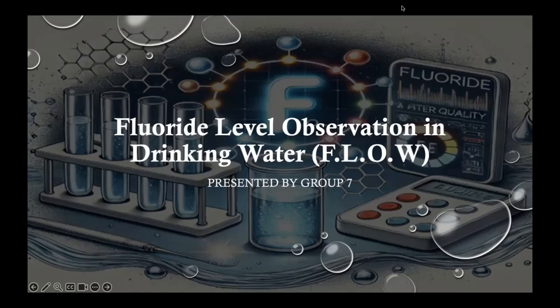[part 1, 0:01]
Hello, everyone. We are Group 7, and this is our final demo presentation, and we will be going over our senior design project, which is fluoride level observation in drinking water, also known as FLOW.
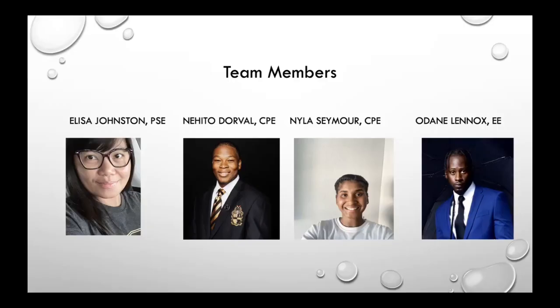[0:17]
And now we will go over our team members. Hello everyone, my name is Elisa Johnston. I'm a photonics engineer. Hi everyone, my name is Nehito Dorval. I'm a computer engineering major. Hello, everyone. My name is Nyla Seymour, and I'm a computer engineering major. Hello everyone, my name is Odane Lennox. I am an electrical engineering major.
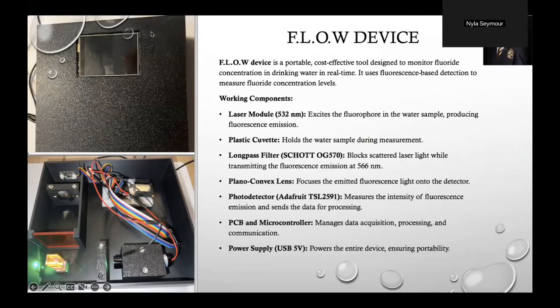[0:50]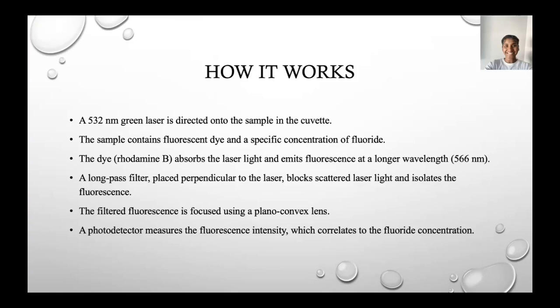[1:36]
Our FLOW device is a portable, cost-effective tool designed to monitor fluoride concentration in drinking water in real time. It uses fluorescence-based detection to measure the fluoride concentration levels. Our working components are the laser module, which is 532 nanometers, a plastic cuvette that holds the sample, a long pass filter that blocks the laser light while transmitting the fluorescence emission, a plano-convex lens for the detector, the TSL2591, which is to send the data for processing, a PCB microcontroller, and our power supply, which uses a USB 5 volts.
We are using a 532 nanometer green laser, and this laser is directed into the sample, which holds our fluoride concentration. We put the sample in our cuvette. Our cuvette goes into our device, into a square holder. The cuvette contains fluorescence dye, which is rhodamine B, and a specific milligram per liter of fluoride. This dye will absorb the laser light, and it emits fluorescence at a longer wavelength so that we can pick up on the emitted light.
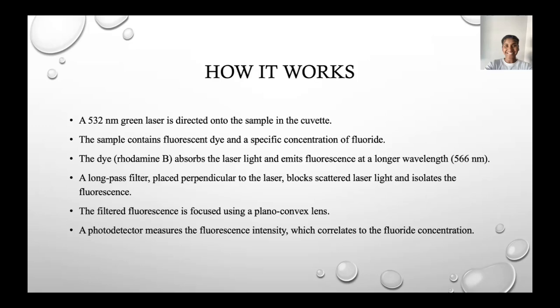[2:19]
This light goes through a long pass filter, which is placed perpendicular to the laser so it can block the scattered laser light, and I can isolate the fluorescence. Now, this filtered fluorescence we will be able to pick up through our lens, which is then detected through our photodiode, also known as our photodetector, which we have within our device. And this picks up on the fluorescence intensity, which will then display as our specific fluoride concentration.
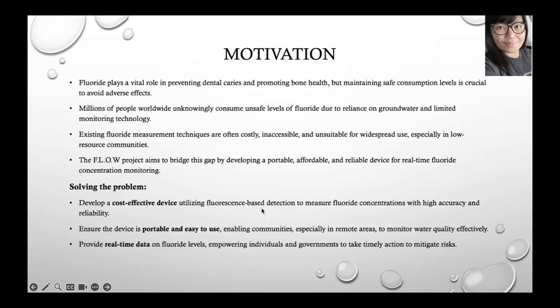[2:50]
We all know that fluoride plays a vital role in preventing dental cavities and promoting bone health. However, maintaining safe consumption levels is critical as excess fluoride can lead to serious health problems. To solve this problem, we are designing a portable, reliable device that uses fluorescence-based detection to measure fluoride concentration with high accuracy and reliability.
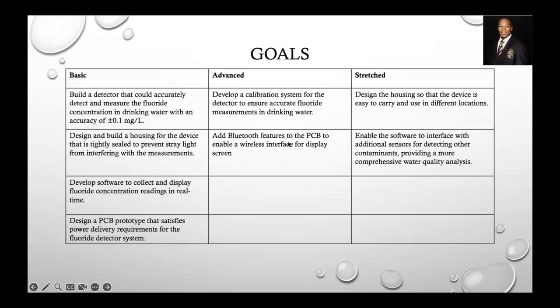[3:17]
Our goals for our project were to build a detector that can accurately detect and measure the fluoride concentration in drinking water. Also, the advanced goal for that was to develop a calibration system for the detector to ensure accurate fluoride measurements in the drinking water. And our stretch goal for that was to design a housing device that's easy to carry and to use in different locations.
The design and housing for the device is tightly sealed to prevent stray light from interfering with the measurements. And we added a Bluetooth feature to it so we can talk to it wirelessly. And our software interface with additional sensors for detecting other contaminants, providing more comprehensive water quality analysis. Our software development was to collect and display the fluoride concentration readings in real time. And our PCB design prototype was to satisfy the power delivery requirements for the fluoride detector system.
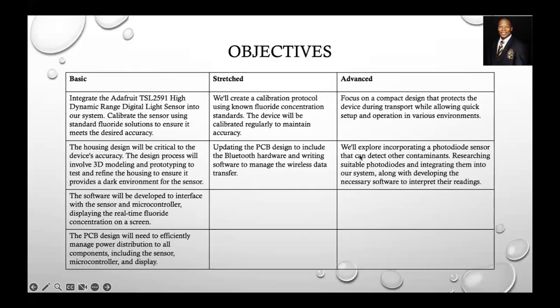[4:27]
Our objectives for our project were to integrate the sensor and calibrate the sensor using the standard fluoride solution to ensure that it meets our desired accuracy. Our stretch goal for that was to create the calibration protocol using the fluoride concentration and to make sure that the device could calibrate regularly to maintain accuracy. And our advanced goal was to focus on the compact design that protects the device during transport to other environments.
Our housing design is critical for our device accuracy, and our process involved 3D modeling and printing to make sure that the housing provides a dark environment for the sensor, and we updated the PCB to make sure we can interact with it with the Bluetooth app.
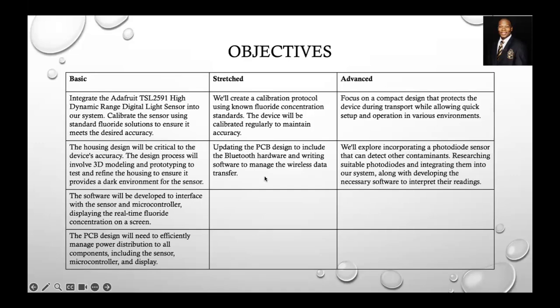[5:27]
For engineering specifications, our top three, we have a laser module that has a 532 nanometer wavelength. This is effective for excitation of the fluorophore, producing a fluorescence emission peak at 566 nanometers. We also have the long pass filter that has a cut-on wavelength of 570 with a bandwidth of 6 nanometers. It blocks the 532 nanometer laser light while allowing fluorescence emission at 566 to pass.
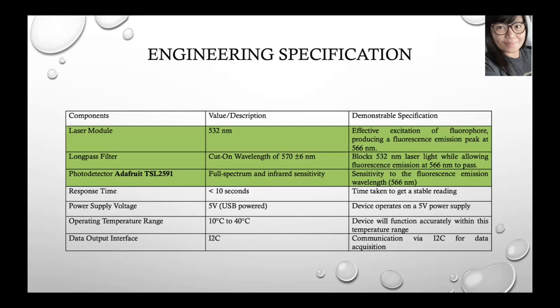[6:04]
Also, another one is the photodetector, the Adafruit TSL2591, with a full spectrum and infrared sensitivity. It's sensitive to the fluorescence emission at the desired emission wavelength.
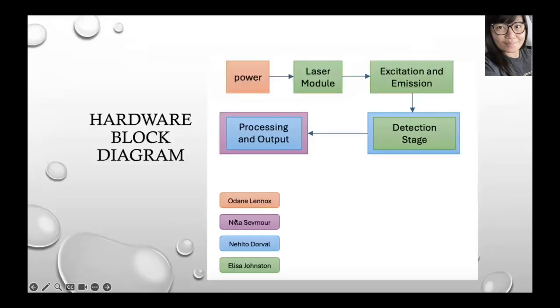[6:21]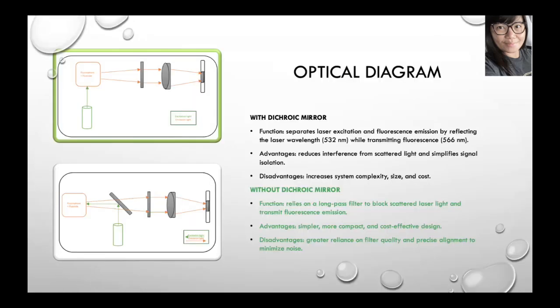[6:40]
For our hardware block diagram, we can see the power, our laser module, and then we have the excitation and emission system, then the detection stage, and the processing and output. For our optical diagram, this is where our optical design comes from.
We started with the dichroic mirror. It separates laser excitation and fluorescence emission by reflecting the laser wavelength of 532 while transmitting fluorescence at 566. The advantage is that it reduces interference from scattered light and simplifies signal isolation. The disadvantage is that it increases complexity, and with our tight budget, the cost is very expensive.
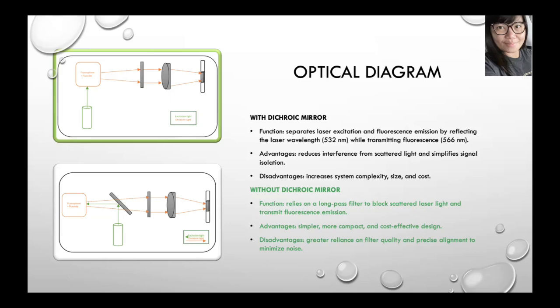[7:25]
It's almost $400. So we wound up using a design without the dichroic mirror, but it still has the same function, relying on the long pass filter to block the scattered light and transmit fluorescence emission. The advantage is that it's a simple, more compact, and cost-effective design. The disadvantage is a greater reliance on filter quality and precise alignment to minimize the noise.
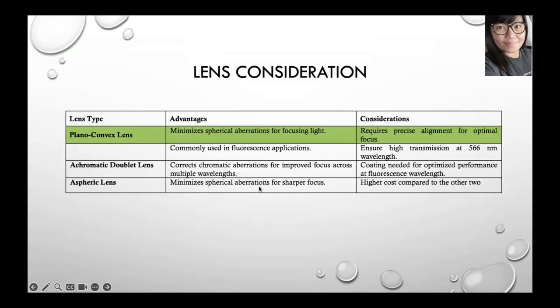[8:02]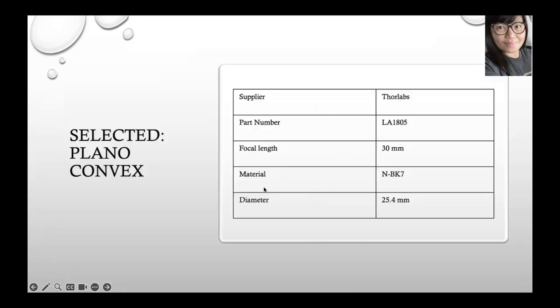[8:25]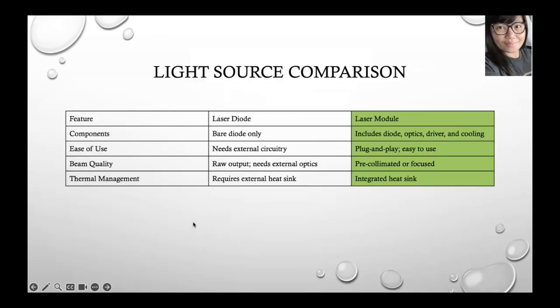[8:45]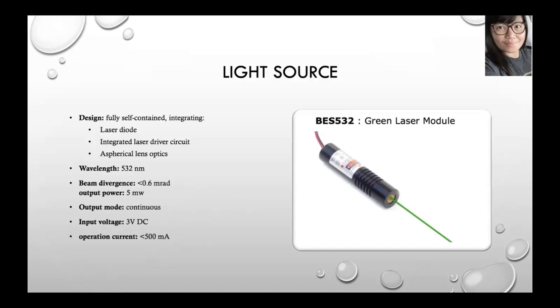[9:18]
For our light source comparison, we wanted to use the laser diode, but we also had in mind the laser module, and we wound up using the laser module because it includes the diode, the optics, the driver, and the cooling. It's also easy to use. We don't need any external circuitry. It's also already pre-collimated and has an integrated heat sink. So we picked this green laser module, which has a wavelength of 532 nanometers, a divergence of 0.6 milliradian, and an output power of 5 milliwatts. That is ideal for our project.
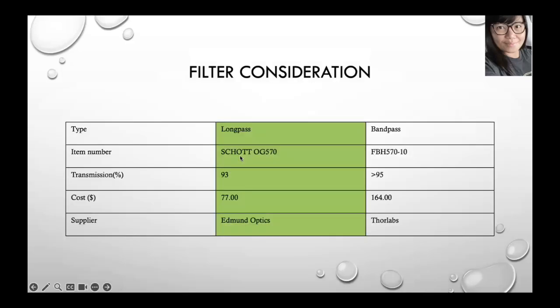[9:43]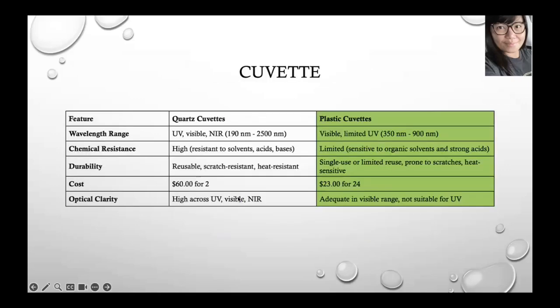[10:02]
For our filter consideration, we had the band pass filter and the long pass filter. We wound up choosing the long pass filter because it's cheaper than the band pass filter, and we got one from Edmund Optics that has a transmission of 93%.
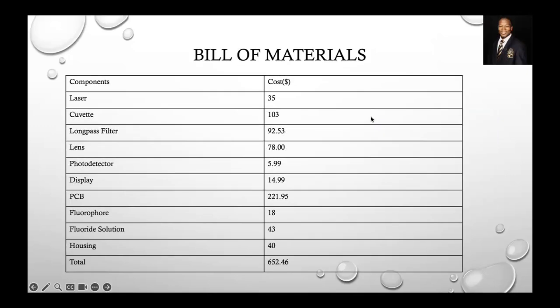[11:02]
BOM, also known as Bill of Materials. The cost for our components were $35 for the laser, $103 for the cuvettes, the long pass filter was about $93, the lens was $78, the photodetector was about $6, the display was $15, the PCB was around $220, our fluorophore was $18, the fluoride solution was $43, and the housing was $40. Which was a total of $652.
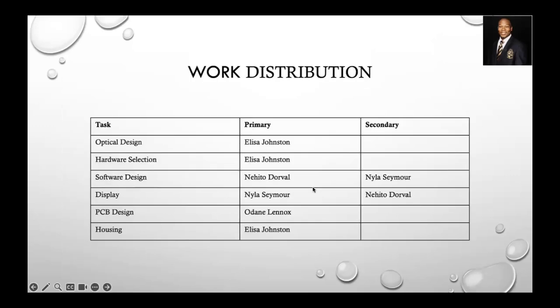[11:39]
Work distribution was pretty evenly distributed. We had the optical design by Alyssa. Hardware selection was by Alyssa also. Software design was between me and Nyla, and display also. The PCB design was by O'Dane, and the housing was done by Alyssa.
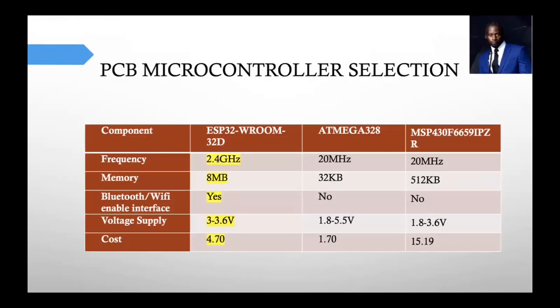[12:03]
For PCB microcontroller selection, we wanted to go with a microcontroller that was pretty flexible and had Bluetooth-enabled features. So the ESP32-WROOM-32D was an optimal choice for that. It also allowed us to use the Arduino IDE development software, which was familiar to the group. So that was another reason why we chose it over the other available options, in terms of the flexibility and the processing power of the chip itself.
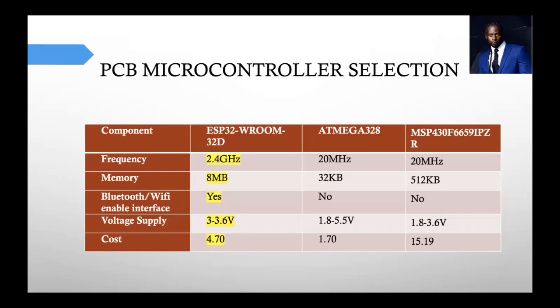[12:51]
For the PCB layout, originally the PCB layout consisted of the bridge, and it had a linear regulator, and they also had a switching regulator. Unfortunately, one of the regulators just wasn't able to really get it to work, and we ended up switching out that switching regulator and just using 2 linear regulators.
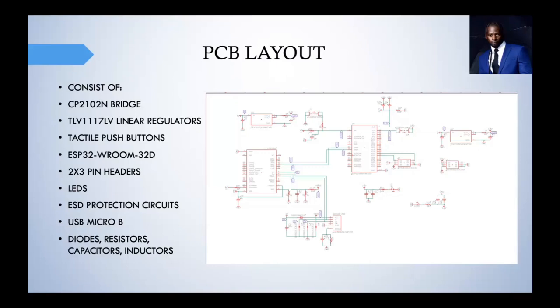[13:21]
And the reason for that was primarily because it turns out we didn't need that additional high voltage that the switching regulator would provide. So the linear regulators were sufficient, and then we had the peripherals like the tactile push buttons, the pin headers, the LEDs, and then we also had our ESD protection circuits. We went for the option of using the micro USB, and then we had diodes, resistors, capacitors, inductors, and everything else.
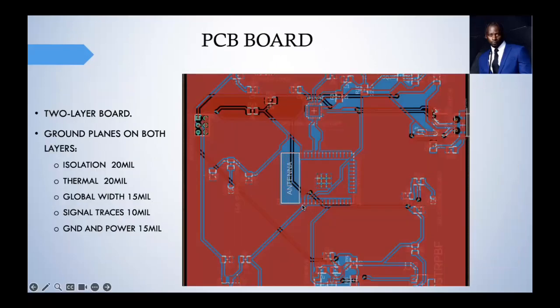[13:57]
And then for the PCB board, we went with a 2 layer layout, and we did an isolation of 20 mils to provide enough spacing. The thermal was 20 or so with a global width of 15, and we kept all of the signals at a minimum of 10, and then all ground and power were set at a standard 15 mil.
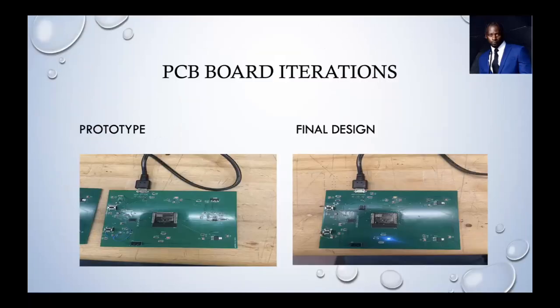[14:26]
So for the PCB boards, we ended up doing 2 iterations. The one on the left was the first iteration. That one was the original board that we used to test and to see what was going on, what was working, what was not. As I said before, the boost switching regulator was not working. We also had a MOSFET on there that was completely ineffective.
And then also we had some minor wiring issues, as you can see the wiring on the left right there. One of the circuits wasn't connected correctly, and so we had to reroute the circuit to supply enough power where it needed to go to the node to make sure the distribution was stable. And then everything else pretty much stayed the same.
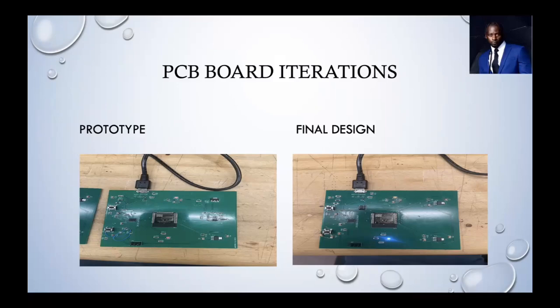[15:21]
That transition over to the final PCB board, the only difference is we switched out the regulator for linear. We added some more pin headers because it turns out we needed additional pin headers for the photo detector and the display. So that's why there's more pin headers there. And then pretty much most of the stuff stayed the same. We kept some more space in to give more heat dissipation. But overall, the board layout didn't change that much.
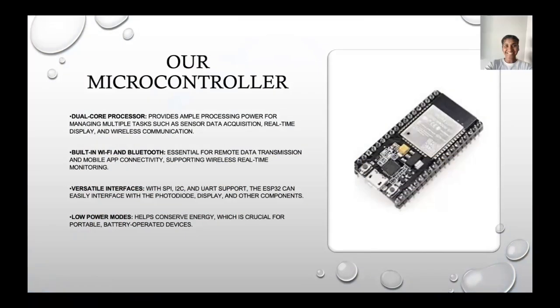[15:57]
Like O'Dane just mentioned, our microcontroller that was used by myself and Nihito was the ESP32 microcontroller. During our testing phases, when we were going through prototyping and trying to figure out how we would work with our IDE, the ESP32 was the most reliable and common source that was also user friendly for what we were trying to accomplish. So with that, it had built-in Wi-Fi and Bluetooth. And that was very important because we wanted to be able to control our device portably so that we'd be able to set certain commands without being in the terminal.
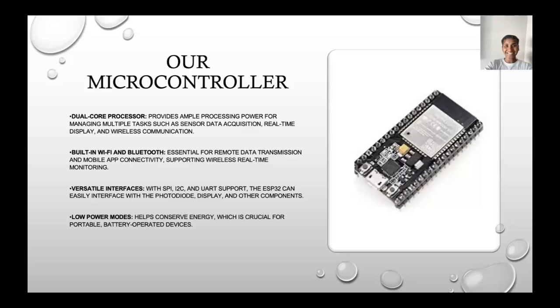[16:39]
It also is versatile with different interfaces. So it has built-in SPI, I2C, and UART support, which is very important for the amount of data we'd be configuring. It also has low power modes, so it will help conserve its own energy. And that's really important because our device obviously has different power that it's receiving in different aspects. So we want to make sure that it would be able to have that self-efficiency.
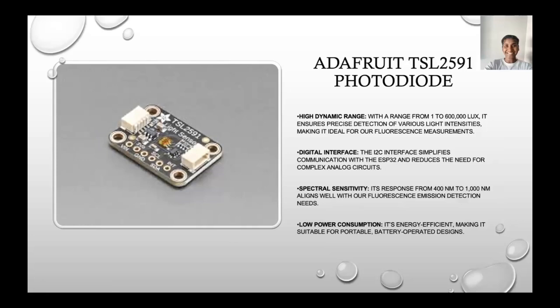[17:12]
So for our photodiode, we are using the Adafruit TSL2591. And we chose this because it has a very dynamic range. It goes from 1 to 600,000 lux. Our lux values are crucial in figuring out how much fluoride is in our samples. When we receive our lux values, we'd be able to figure out the light intensity from our emitted light. And that goes very hand in hand with our fluoride concentration values. So that was really important.
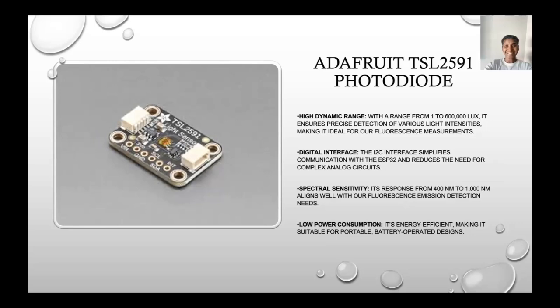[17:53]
And then also having that digital interface is very important with the I2C interface, which would go hand in hand with the communication of the ESP32 microcontroller. And then it also has low power consumption. All the devices that we try to have have this, and we wanted to make sure that we weren't overheating our device, so we chose something that had low power consumption.
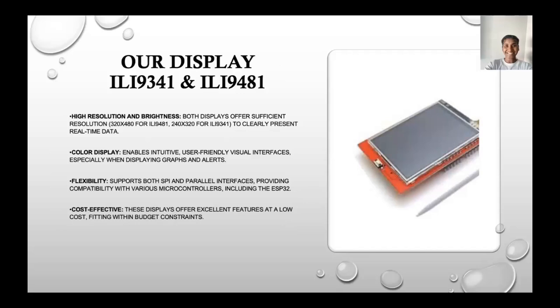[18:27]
Our display. So we chose the Adafruit ILI9341, and we were able to display all of the fluoride concentration on this device. It comes with touchscreen capabilities, and it's very flexible. It has a lot of the libraries built into the Arduino IDE, which we will get to in a second. It has a very high resolution. It also has great brightness.
And then it's able to present real-time data, which was very important for us because when our photo detector data came in, we wanted to make sure that we would be able to relay that data in real time. But also, it's very cost effective. We were able to order our display for $15, which was very important to us because we had to stay en route with our budget and in reflecting of our bill of materials.
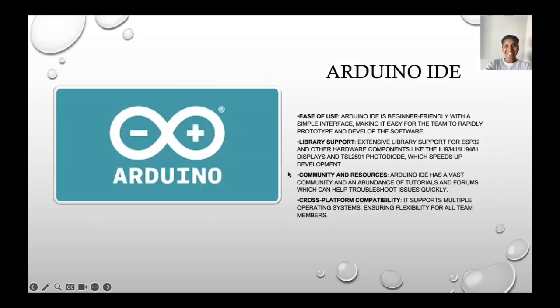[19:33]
So like I just said, we use Arduino IDE, and this is because Arduino has a history of being a very easy to use, user-friendly work environment, especially when we're doing such high level things. It's very important that we have a library that supports all of our needs. So Arduino has a very extensive library support for the ESP32 microcontroller, which is also why we went with that microcontroller, as well as for the photodiode. And then also there's a lot of compatibility across platforms, which is able to support all of our operating systems and flexibility for all of our team members.
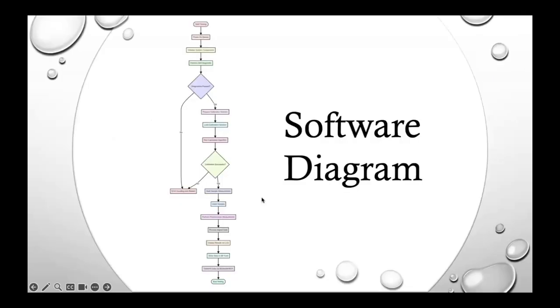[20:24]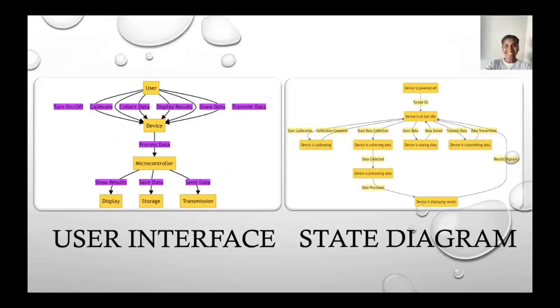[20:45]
So as you can see here, this is our software diagram. And this software diagram is our general software diagram, which shows how we were able to achieve our fluoride concentration displays for our device. Now, these are smaller subset diagrams. So on the left, you have our user interface, and the user would allow the device to turn on. So through the BLE connection, which we'll get to in a second, you'd be able to power on the device and store data, to collect data, display results through all those commands. And then they would process that data and be able to also save, send, and show results.
For our state diagram on the right, we have how our device is powered off, and when the device is powered off, like I said, through our BLE connection, we can turn the device on. It would be idle, so it would not be in a ready state, but we can put it in a ready state by calibration, by collecting data, by storing data and transmitting data, depending on what we would want the device to do. And then it'd be able to process that data and display those results and then go back to its powered off state through the BLE device.
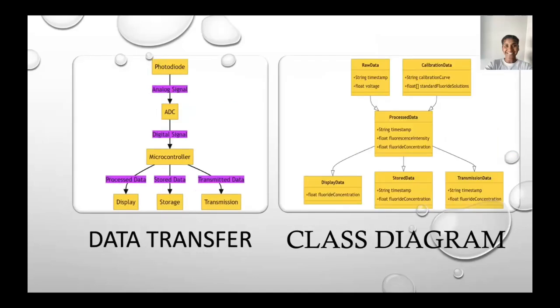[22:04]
So we have our data transfer diagram to the left. With the photodiode is where we get our first layer of data with the emitted light the photodiode picks up on. So through the photodiode, it changes the analog signal to ADC and then digital signal, and that digital signal will show up as our lux light intensity values, and that will show up through our microcontroller. Our microcontroller would be able to convert those signals so it could be stored on our side through our terminal, and then we'd be able to process that data and see how it's being read through our display.
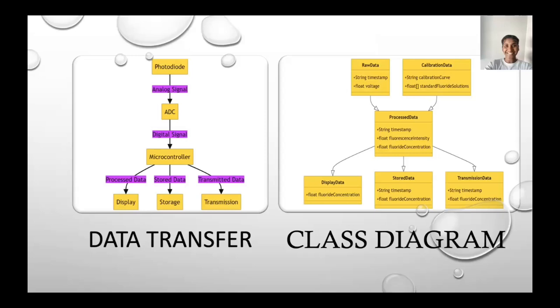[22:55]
On the right, we have our class diagram. And our class diagram just goes through how we're able to display our data, input raw data, and store raw data, calibrate our data to show our calibration curve, and timestamp data with our process data, transmission data, and store data.
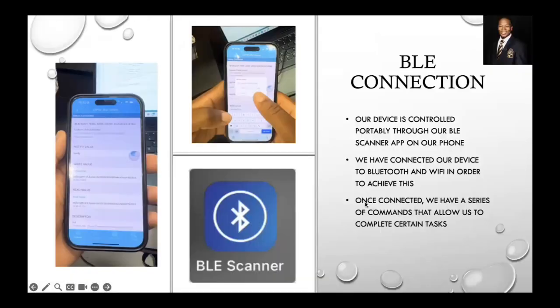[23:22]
All right. So through our BLE app, through our code we made a portion where we had to make sure that we establish a name for the device, and through our BLE app, we tried to see if we can find the device. And when we do, we select it, and through there, we press customize characteristics. Through the customization of the characteristics, we get to write, notify, or set our values, so our commands, I would say. And from there, we are able to send our commands through the device, and we tell it to turn on, turn off, just all the commands that Nyla previously stated. We're able to do all those things with the app, which is very helpful for the ease of use of our device.
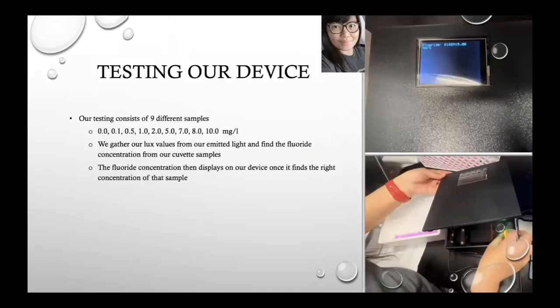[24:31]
For testing our device, our testing consists of 9 different samples, as I mentioned earlier. We have from 10 milligrams per liter down to 8, 7, up to just the distilled water. We gather our lux values from our emitted light through our photodetector and find the fluoride concentrations from our cuvette samples. The fluoride concentration then displays on our device once it finds the right concentration of that sample.
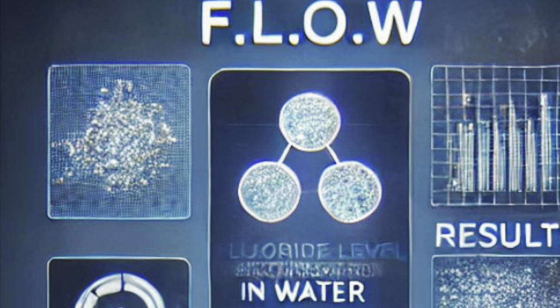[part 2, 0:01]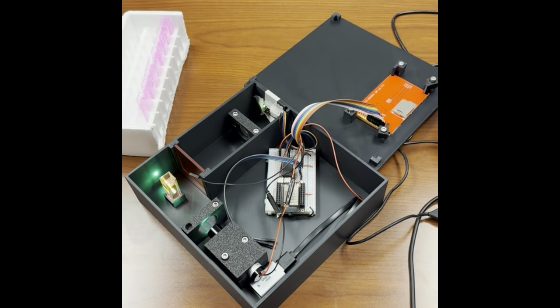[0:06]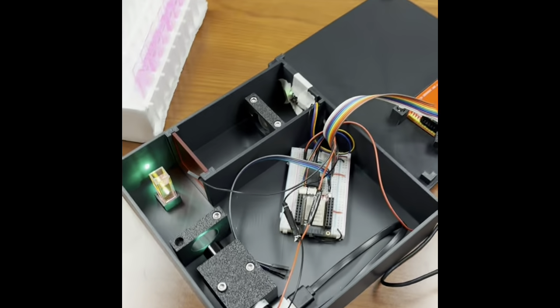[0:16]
Hello everyone, we are Group 7 and we are presenting our team design project, which is fluoride level observation in drinking water. This is the inside of our device.
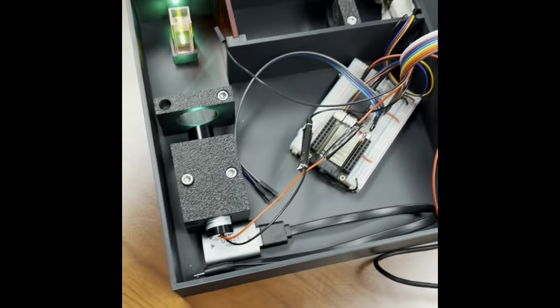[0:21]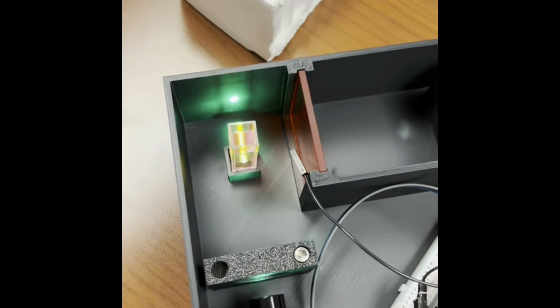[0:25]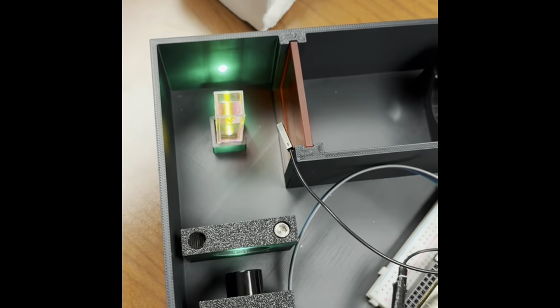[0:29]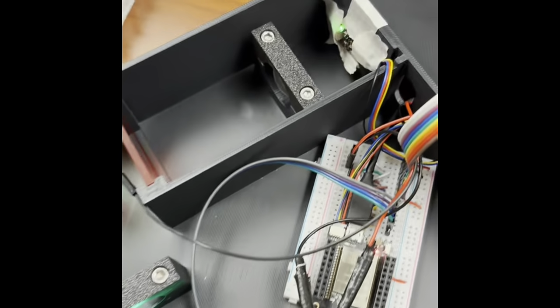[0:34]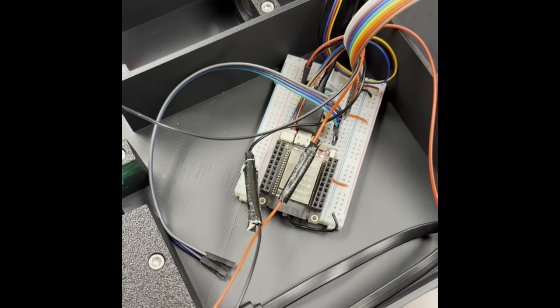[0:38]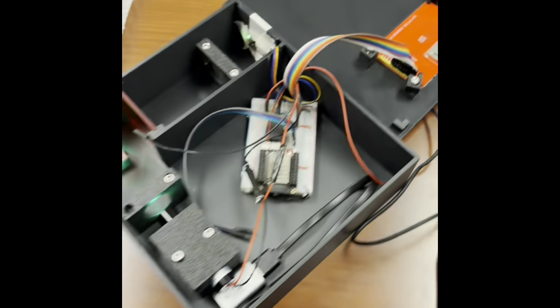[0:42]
As you can see here, from this point we have our laser, our filter and our lens. In this square holder is the sample cuvette that has the rhodamine B and the fluoride concentration. We have our photodiode, and we have our ESP32 microcontroller that is connected to our display.
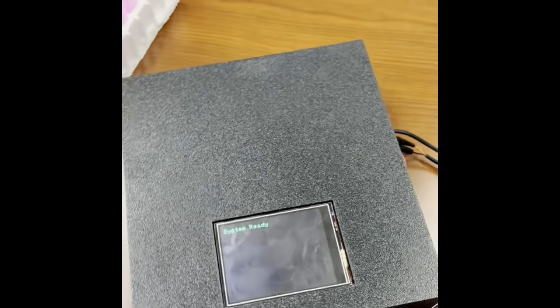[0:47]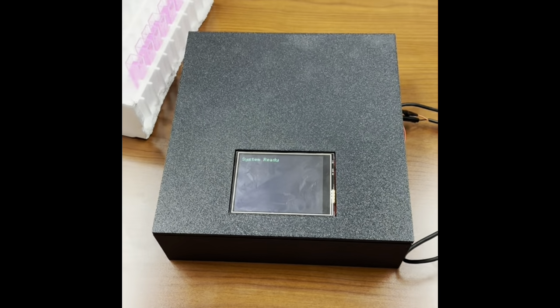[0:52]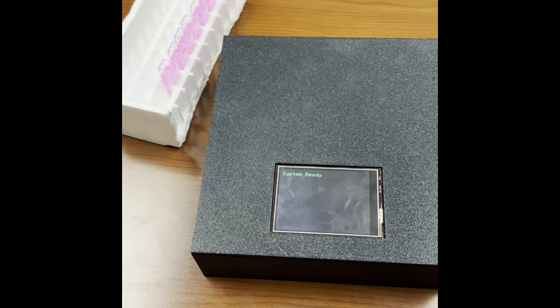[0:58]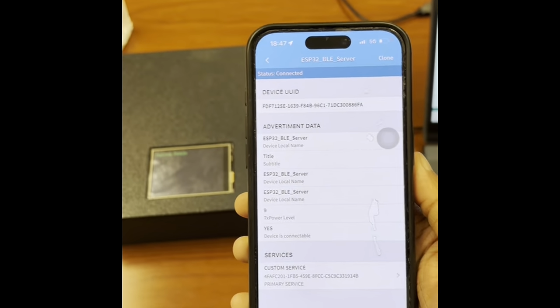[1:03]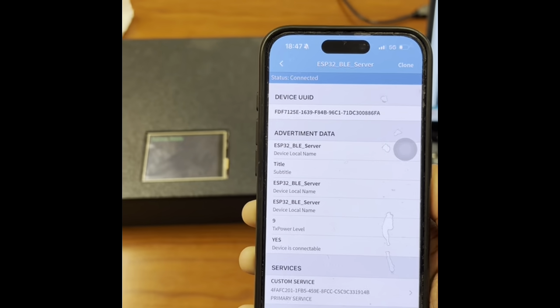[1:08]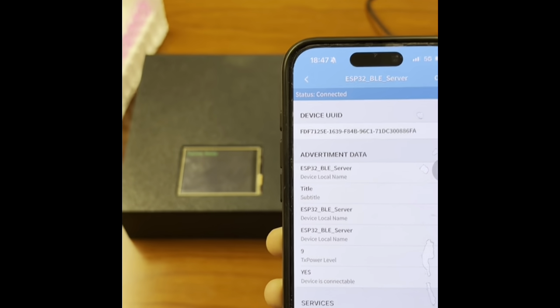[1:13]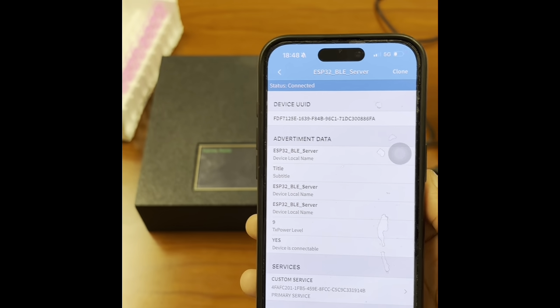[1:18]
Okay, so as you can see here, our system says it's ready. This is connected through our Bluetooth device. We have a BLE server on our BLE connection that's connected to our device, and we are able to connect to it to make sure that it says system ready, along with other commands that allow us to control our system portably.
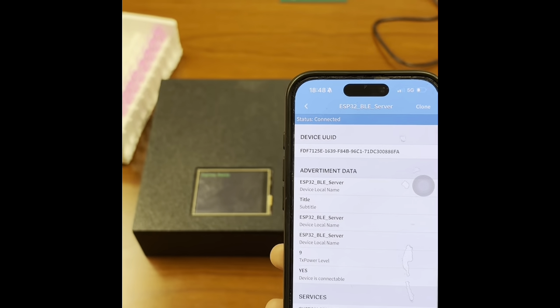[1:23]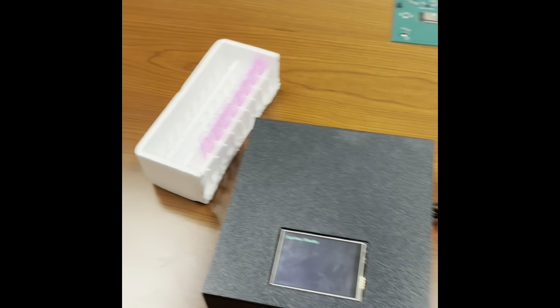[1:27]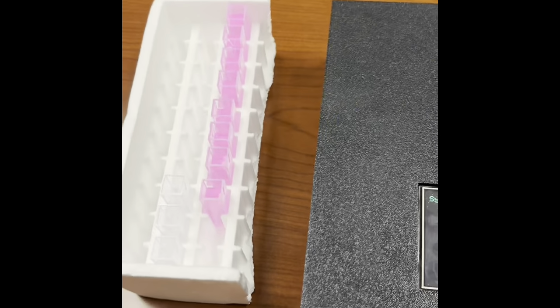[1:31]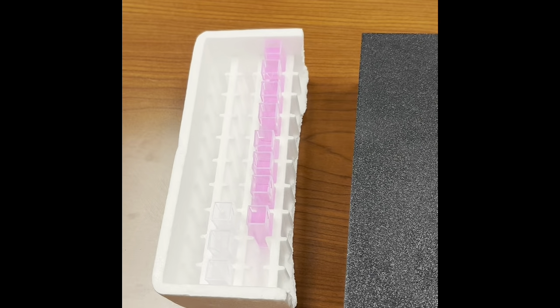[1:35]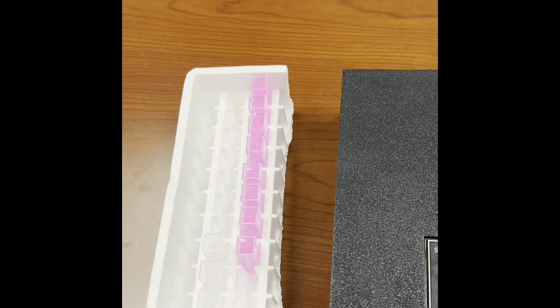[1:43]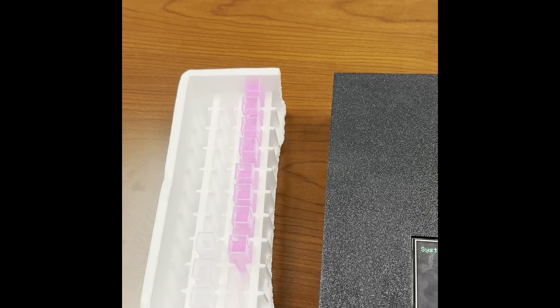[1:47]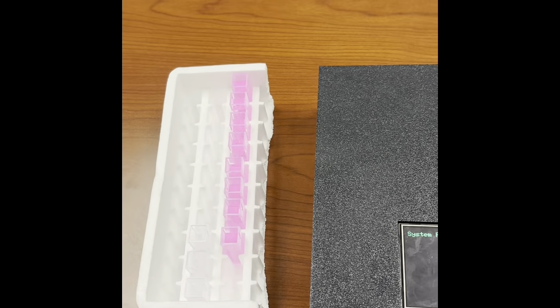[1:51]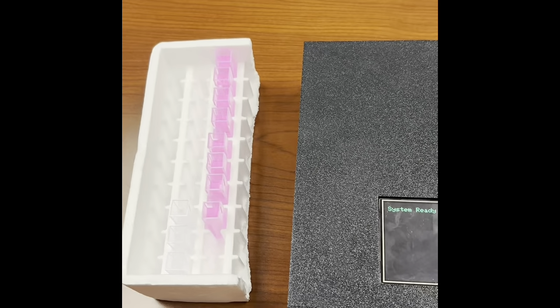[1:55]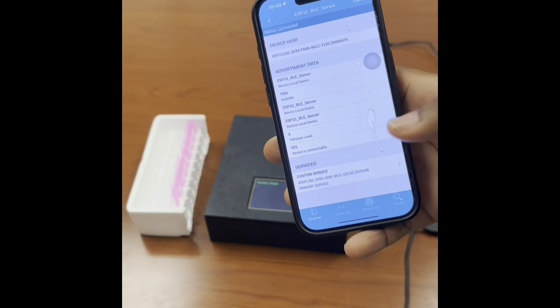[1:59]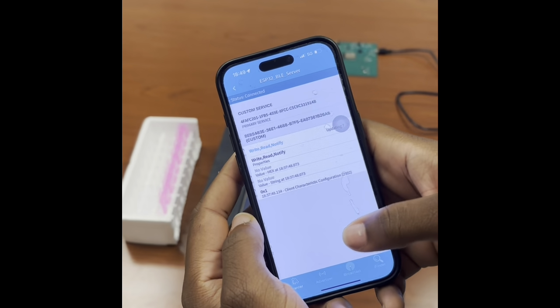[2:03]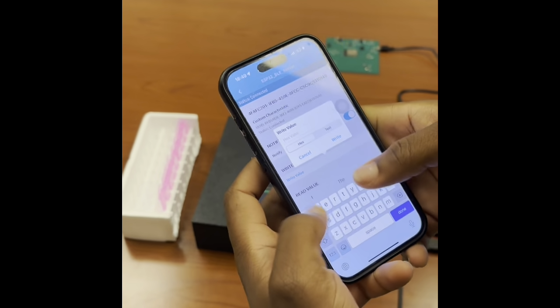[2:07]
So now we will go through our samples and show you what we will be testing. As you can see here, we have 9 different samples: 0.0, 0.1, 0.5, 1 milligram, 5 milligram, 2 milligram, 7 milligram, 8, and 10 milligrams. That consists of all of our samples. We're going to send a command to our monitor device to start the testing.
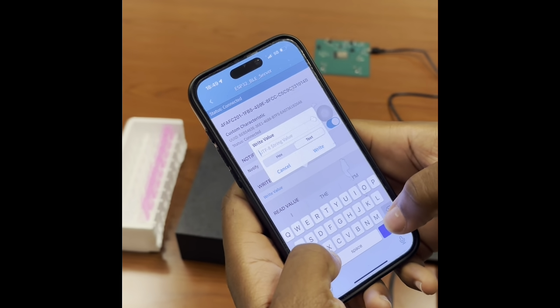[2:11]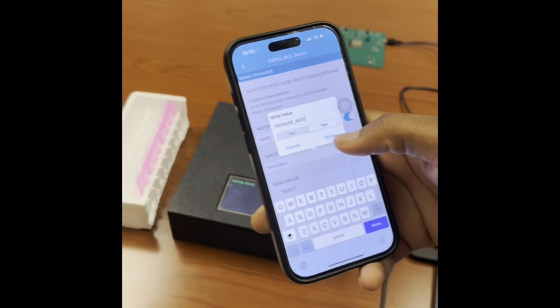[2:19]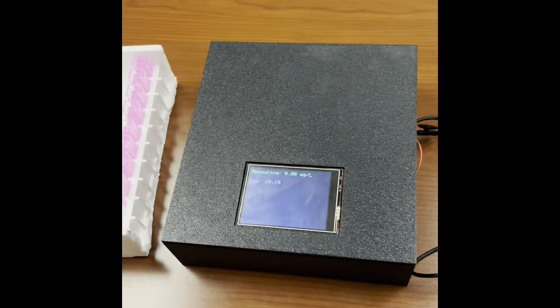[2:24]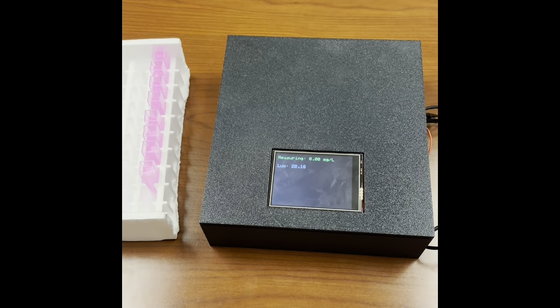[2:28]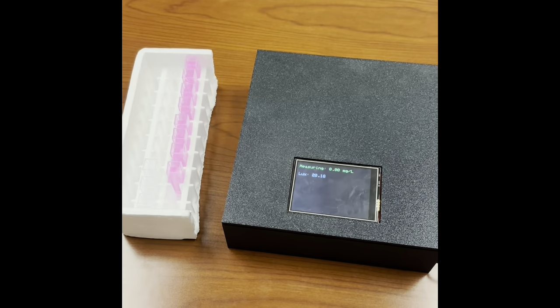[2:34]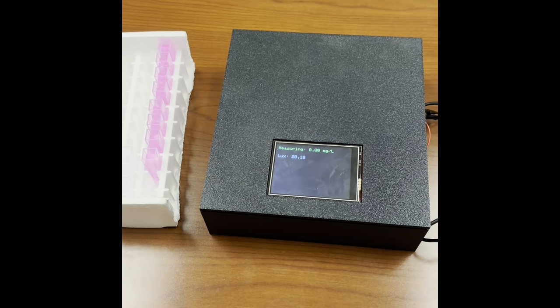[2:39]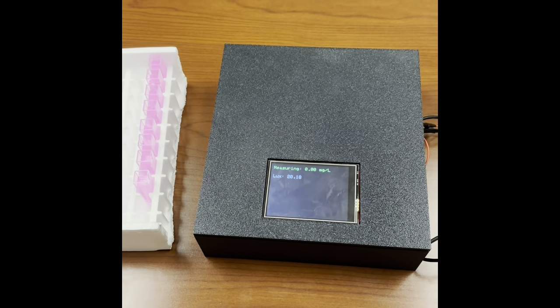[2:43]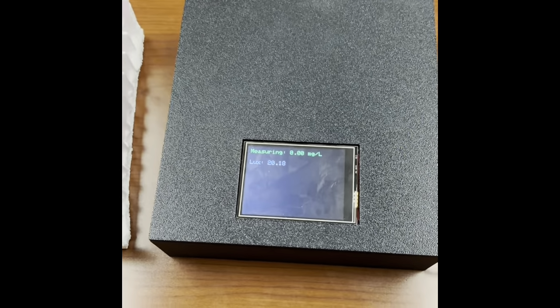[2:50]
Then press it, and it will just start measuring. As you can see, our first sample inside of our device is 0.0 milligram per liter, and this is regular drinking water. It's just distilled water. Within our device, our orange emitted light is hitting our photodetector, and it is gathering the fluorescence intensity, and right now it's showing up as 20.18.
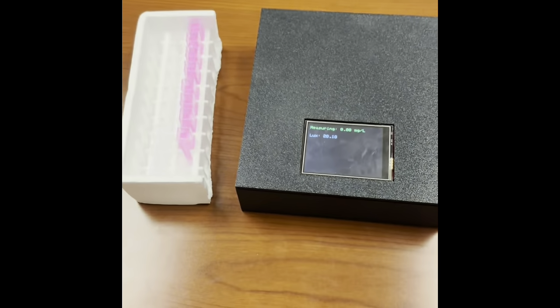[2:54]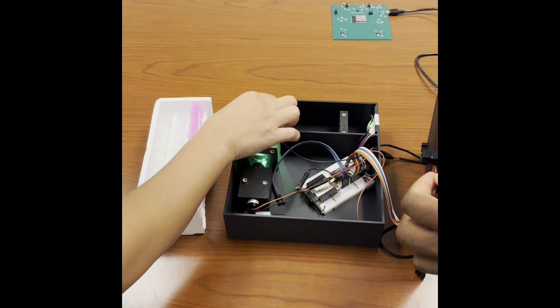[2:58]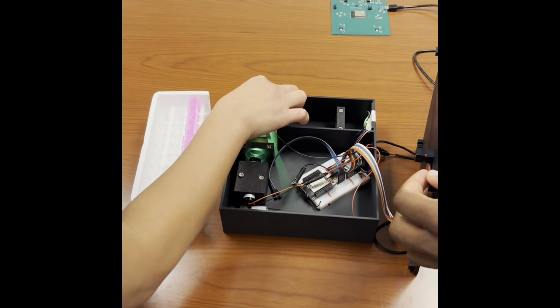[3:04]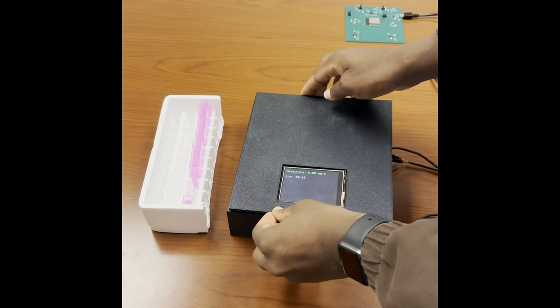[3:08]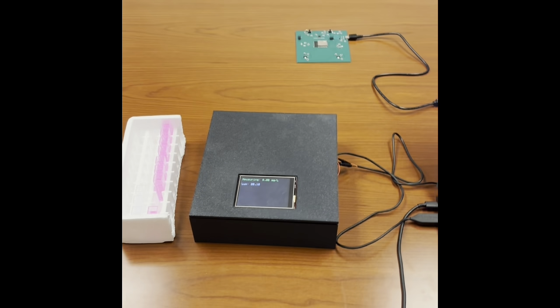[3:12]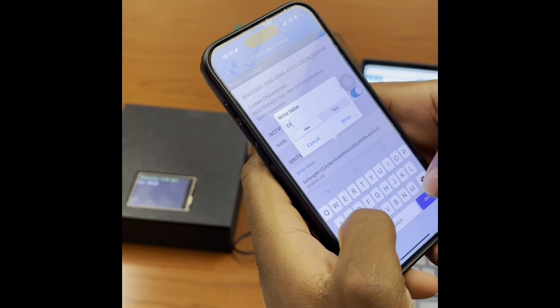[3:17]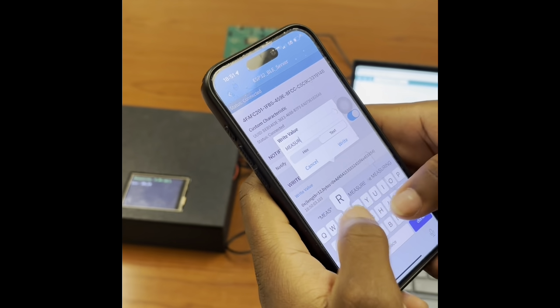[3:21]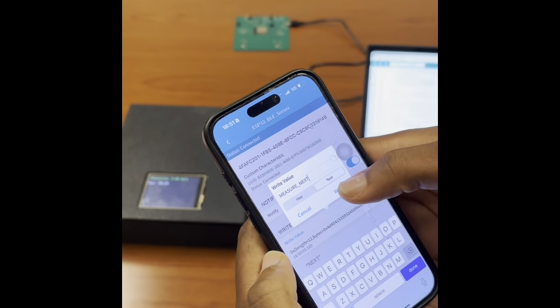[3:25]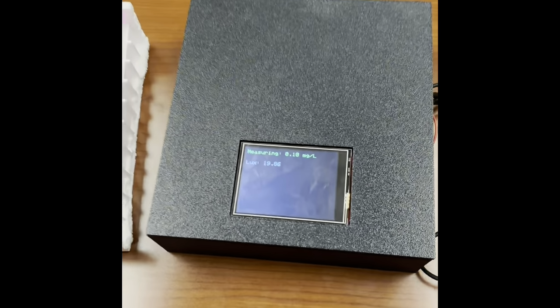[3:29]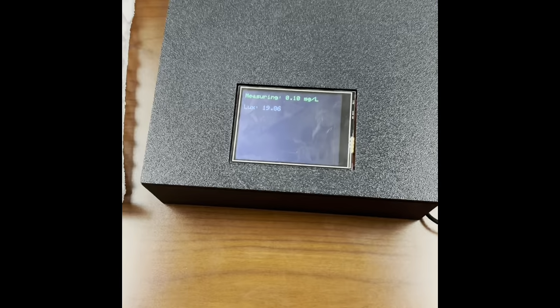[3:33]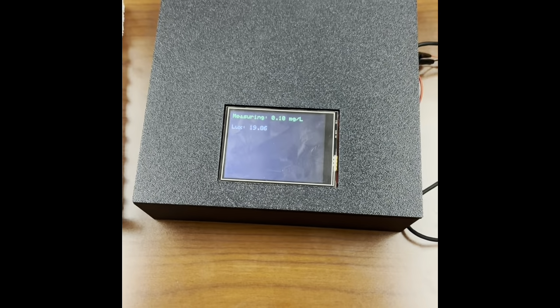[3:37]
Now we will be opening up our device and changing out our 0.0 milligram per liter sample for our 0.1 milligram per liter sample. Once again, using our Bluetooth portable app, we will be able to take the next sample. And now it is showing that our fluorescence intensity is 19.86 for our 0.1 milligram per liter sample.
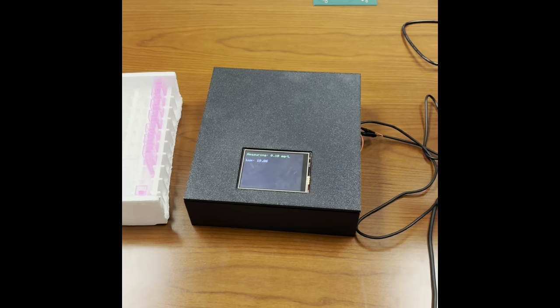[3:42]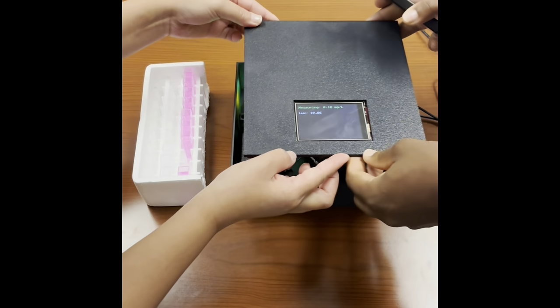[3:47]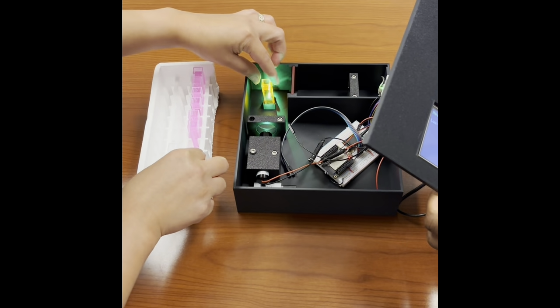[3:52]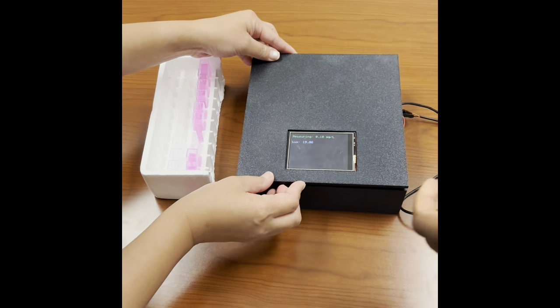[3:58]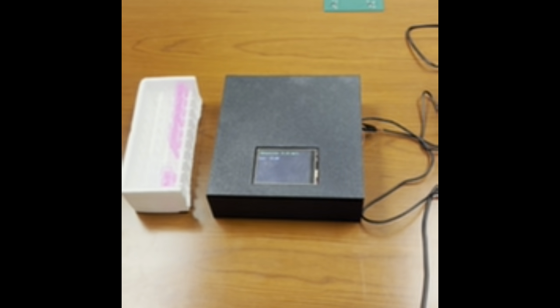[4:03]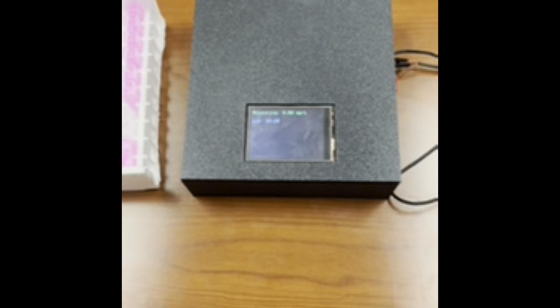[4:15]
Now we will change out our sample and calculate the next cuvette, 0.5. We are putting in our... I thought it was 0.2. Now we will be calculating our 0.5 milligram per liter cuvette sample. And the lux value is 23.22 for our 0.5 milligram per liter sample.
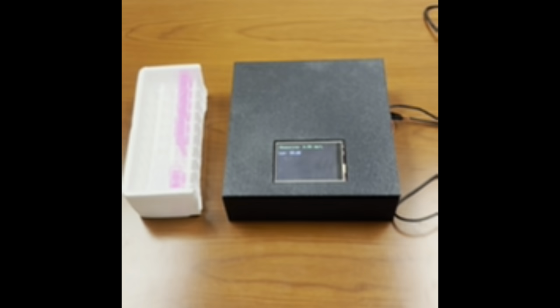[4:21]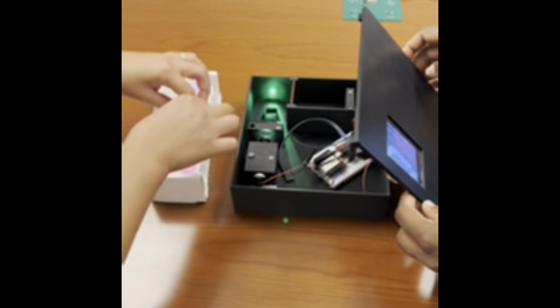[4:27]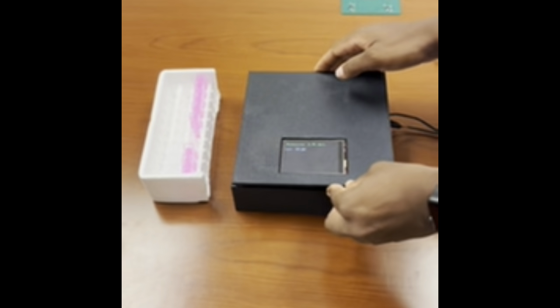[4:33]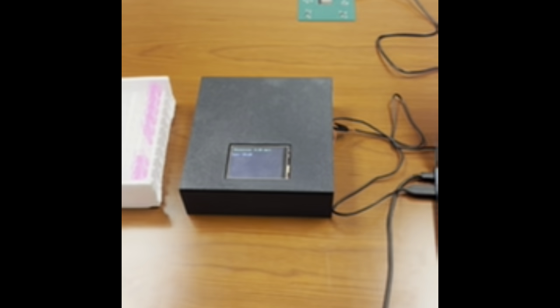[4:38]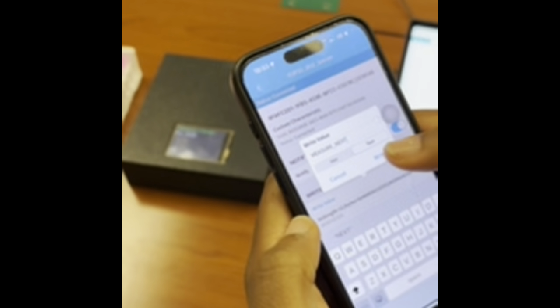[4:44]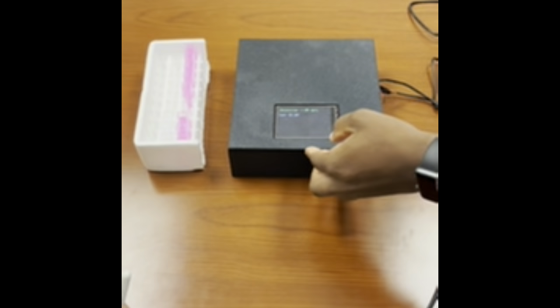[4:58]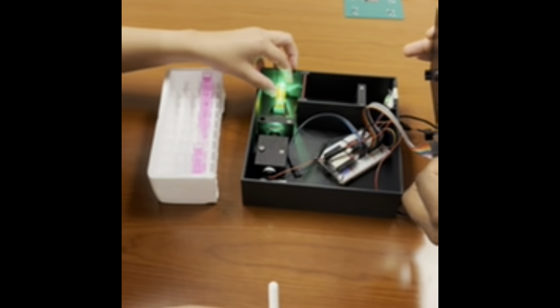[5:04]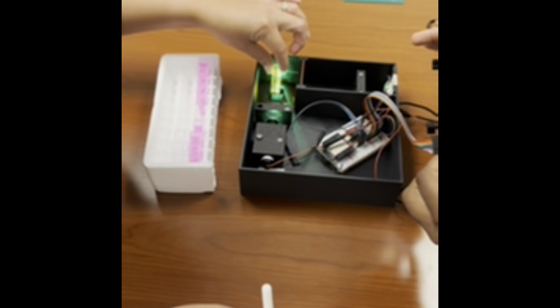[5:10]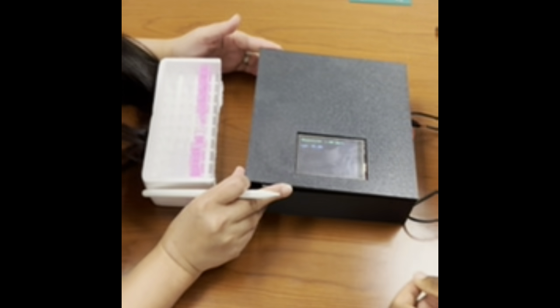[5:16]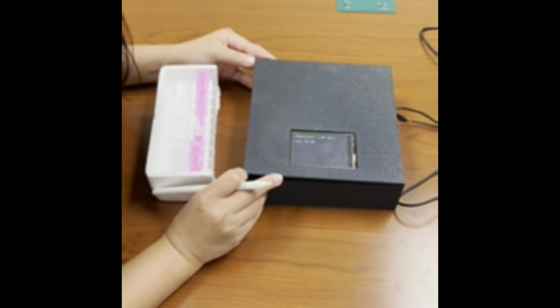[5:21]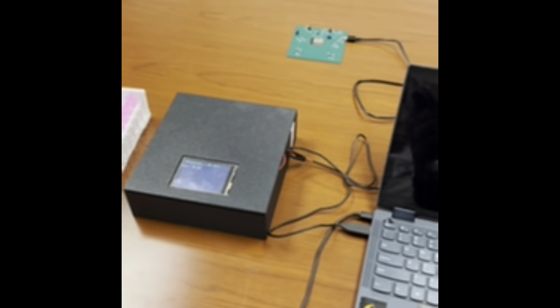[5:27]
Now we will be calculating our next cuvette sample, which is our 1 milligram per liter. All right, now we have our next calculation, which is our lux showing 21.54. Now we will be testing our 2 milligram per liter sample. For the 2 milligram per liter sample, our lux is 21.02.
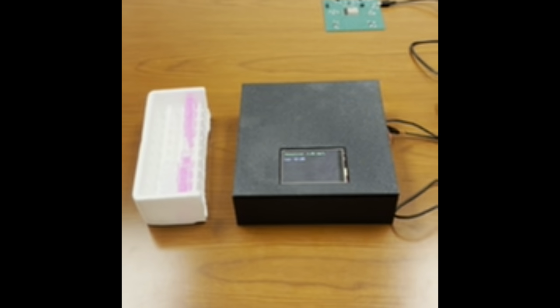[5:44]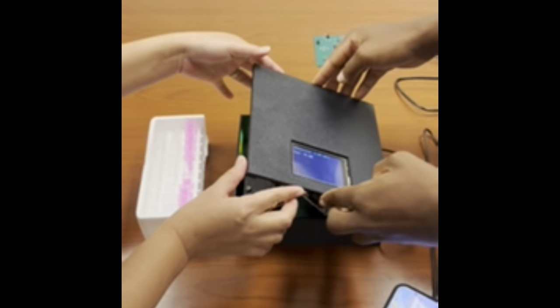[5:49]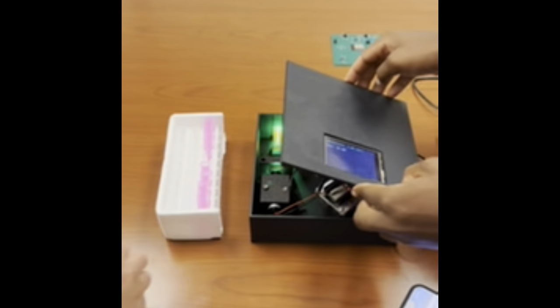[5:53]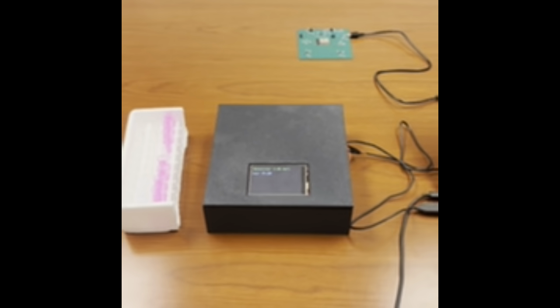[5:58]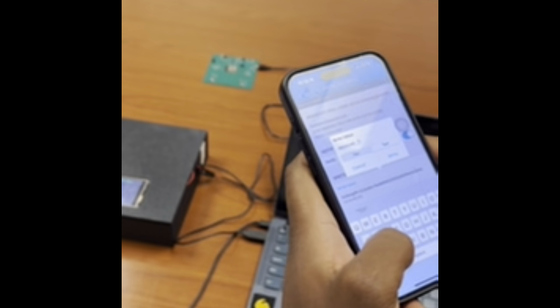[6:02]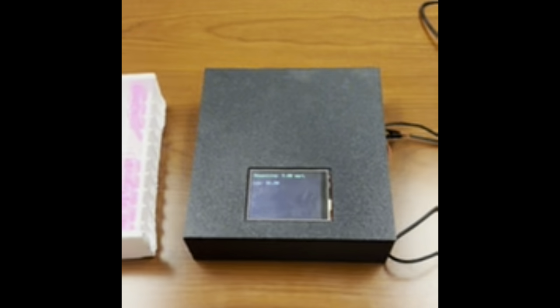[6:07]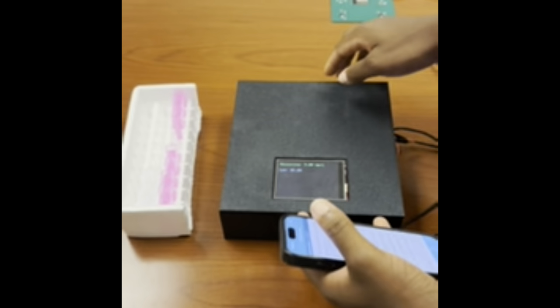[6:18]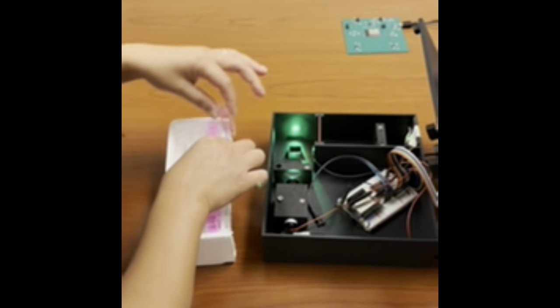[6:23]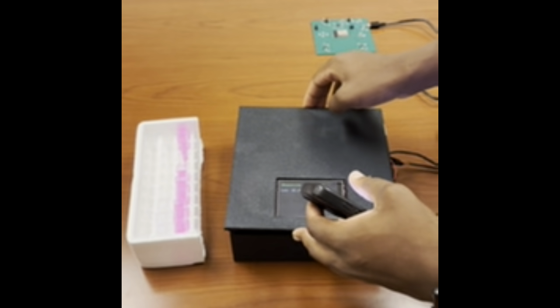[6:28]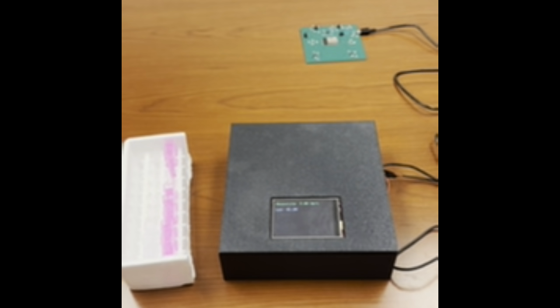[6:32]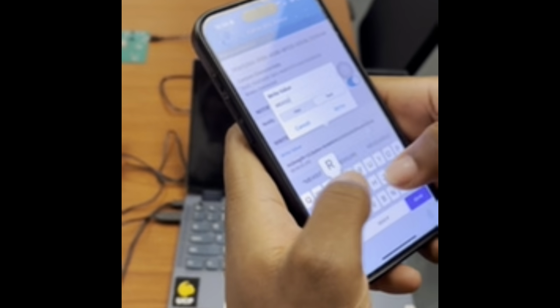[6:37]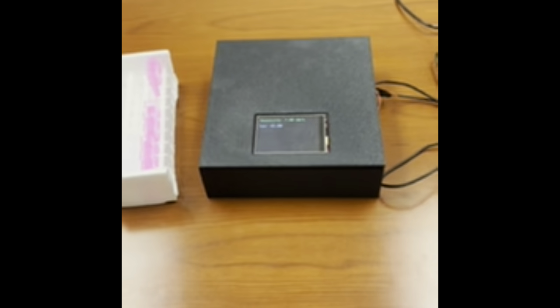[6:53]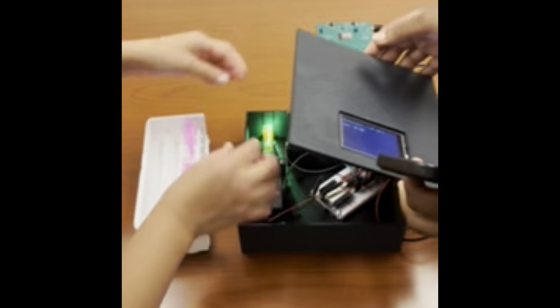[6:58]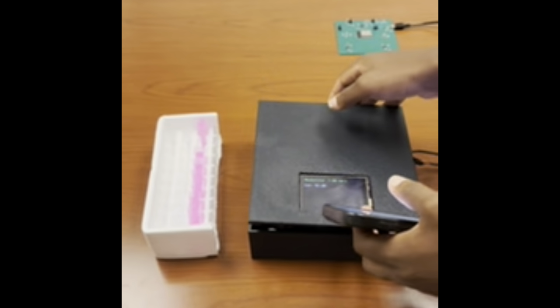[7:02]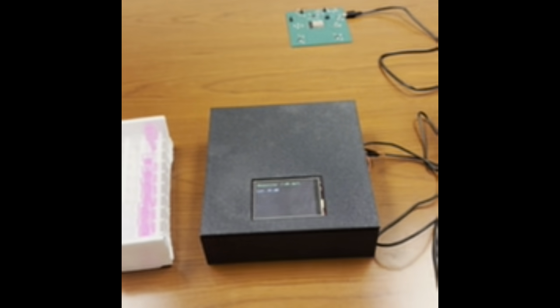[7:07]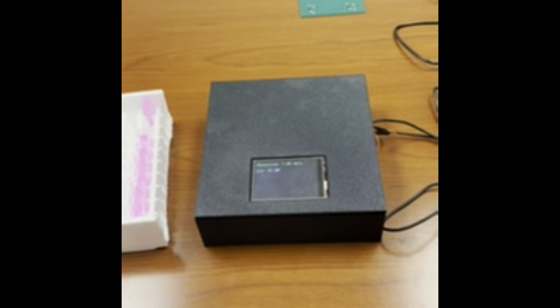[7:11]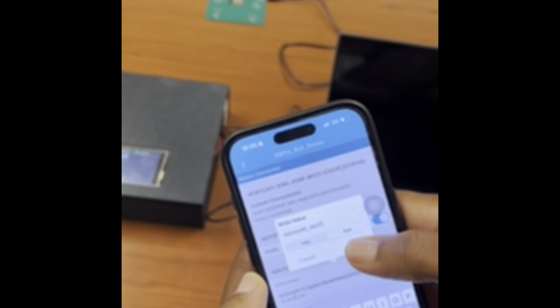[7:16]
Our next sample is our 5 milligram per liter cuvette. Okay, so we're measuring our 5 milligram per liter sample, and our current lux value is 21.34. Now we are measuring our 7 milligram per liter sample, and it's showing 21.82 for our lux value. Our next sample is 8 milligrams per liter, and our lux value is showing 21.38.
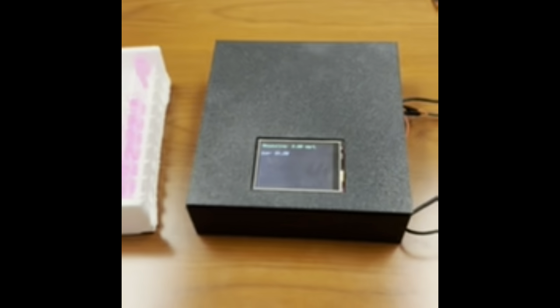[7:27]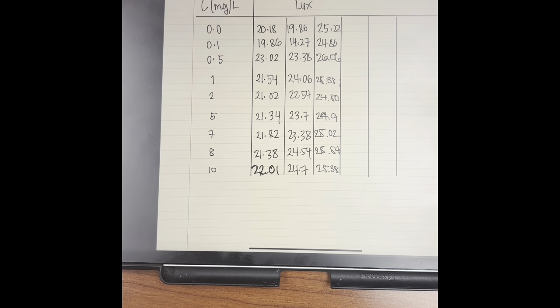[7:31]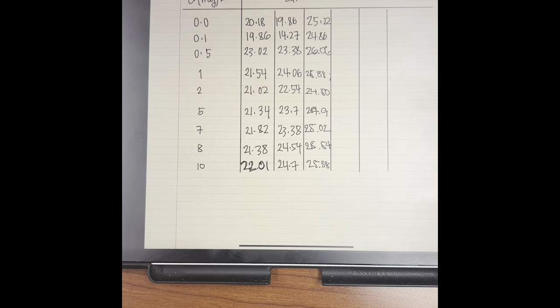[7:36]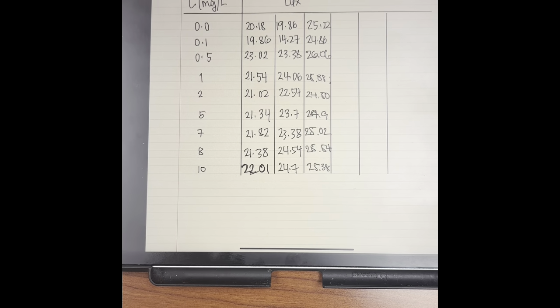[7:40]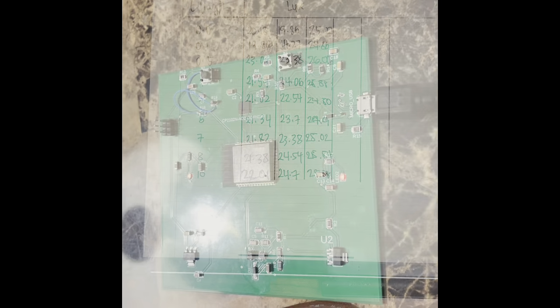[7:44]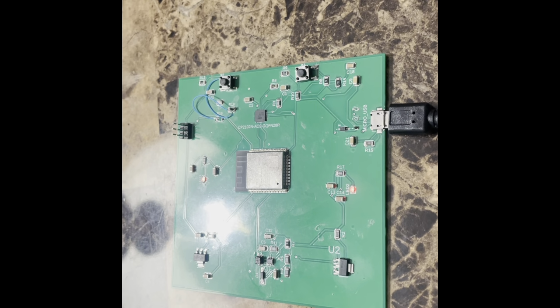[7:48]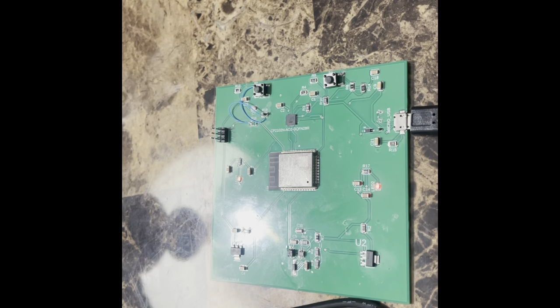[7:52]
Okay, after our first initial testing that you saw, we did 2 more rounds of testing, and we were able to gather more results, and this allows for better repeatability and consistency with our device. Hello, this was the first iteration for the Group 7 PCB. Here are some of the issues that we ran into with the PCB to start off.
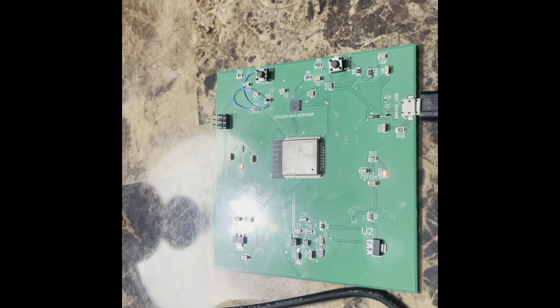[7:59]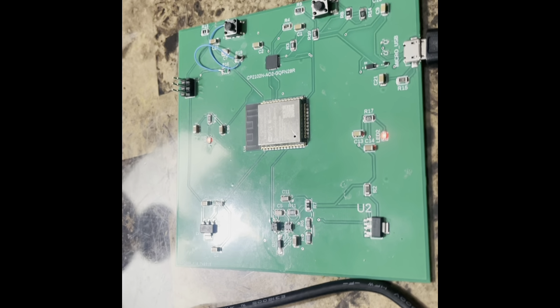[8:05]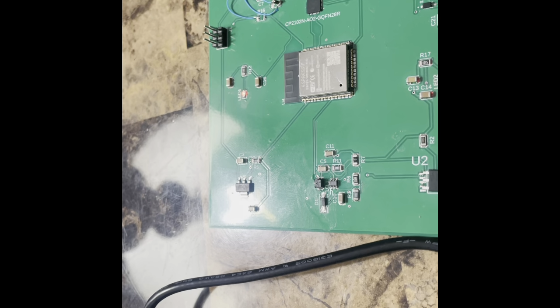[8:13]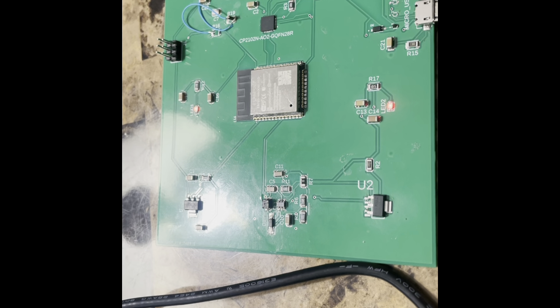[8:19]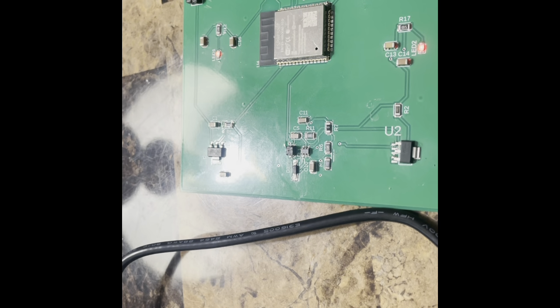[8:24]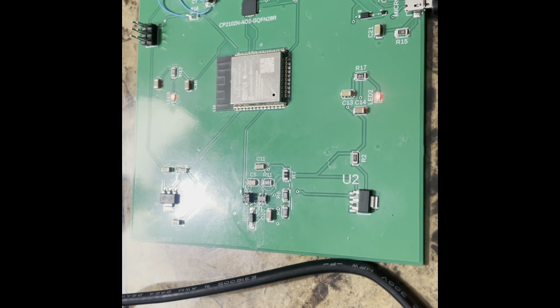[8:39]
One of the circuits that was controlling the chip was wired incorrectly, and that was causing a problem that resulted in the chip not being booted up. So we had to go back and reroute a trace to a new resistor that's right here on R19, which gave us the extra trace that was needed so that the PCB could boot up.
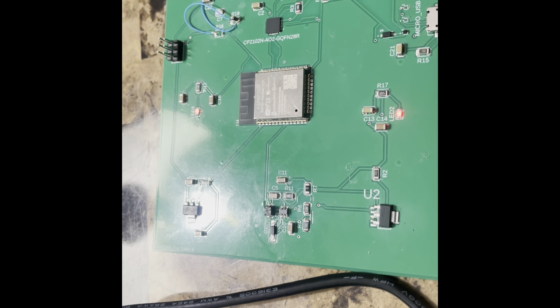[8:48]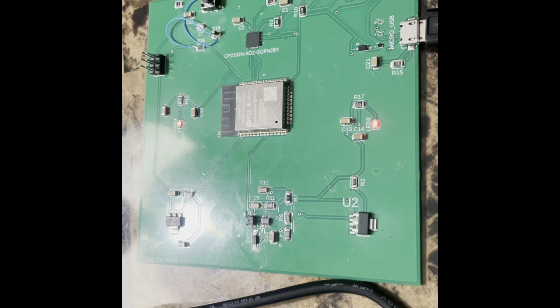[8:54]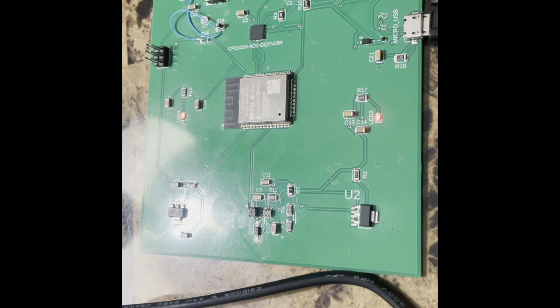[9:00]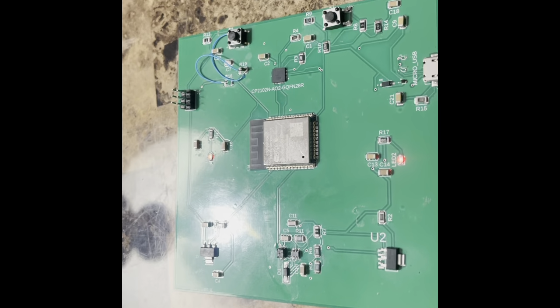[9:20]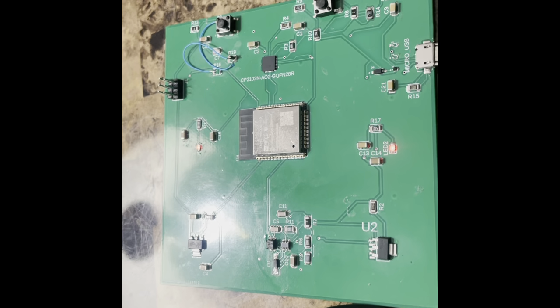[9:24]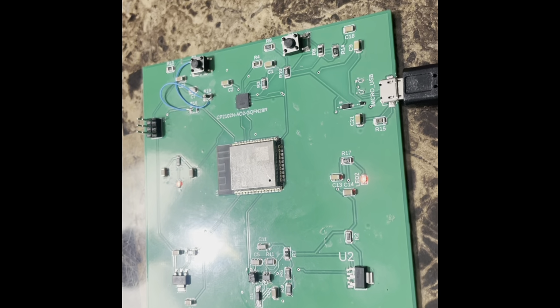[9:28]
Another issue was the boost switching regulator that we used. That one was not working. One of the main reasons was that the MOSFET that we used was implemented incorrectly, in addition to the regulator itself having issues when adding load for testing. It just was not regulating the voltage correctly. Overall, every other component worked, and we were able to fully get the chip working in terms of booting up the MCU.
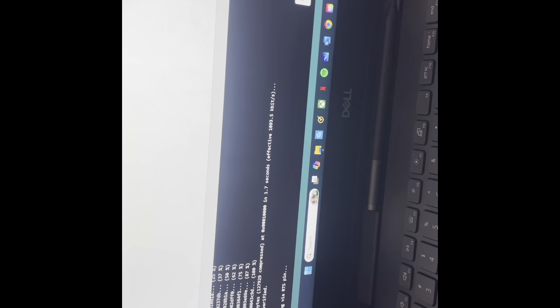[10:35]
To show a small demonstration, we go over here to the laptop, and then we will be selecting the port. Then we'll be running a small miniature code just to show that everything is working according to plan. So now we have compiling, and I'm going to press reset and hold boot down, and then we'll see what happens. And here you can see that we're able to successfully connect, which means that we're able to run code.
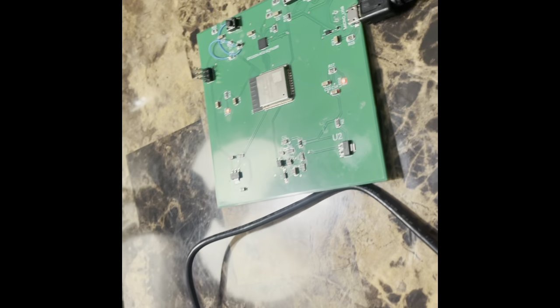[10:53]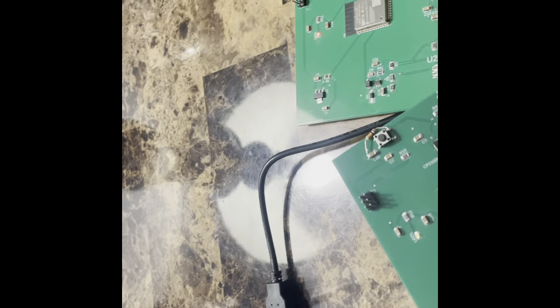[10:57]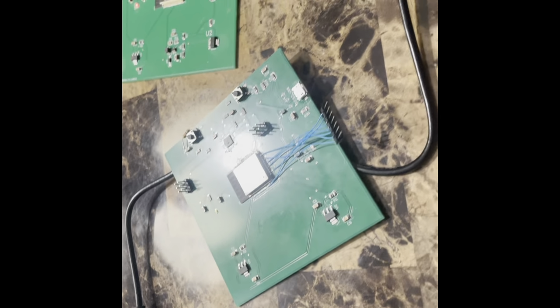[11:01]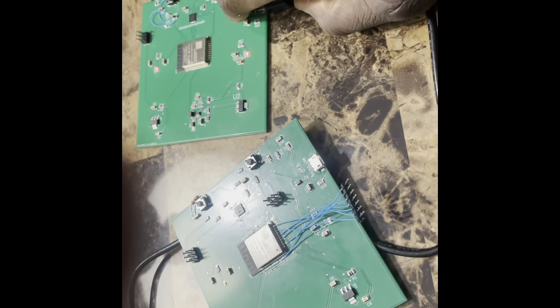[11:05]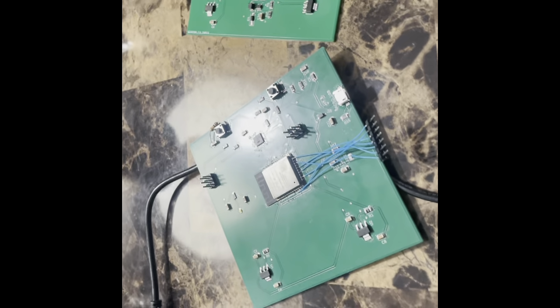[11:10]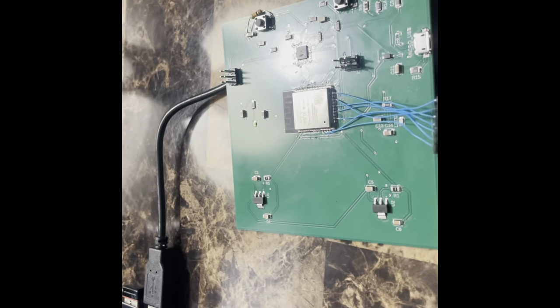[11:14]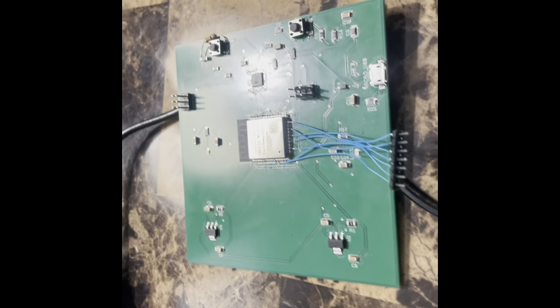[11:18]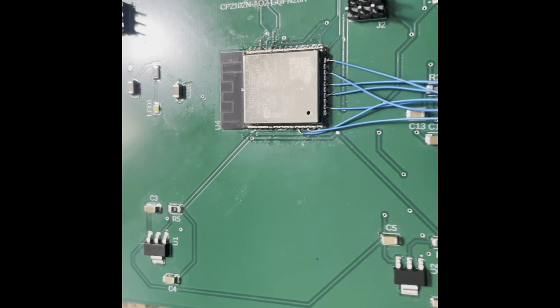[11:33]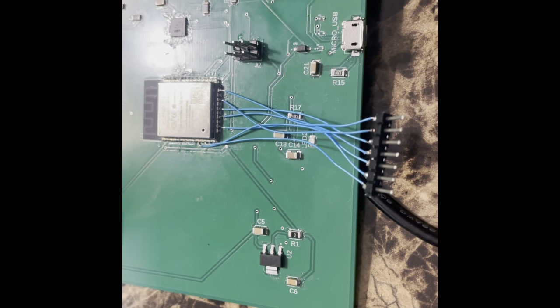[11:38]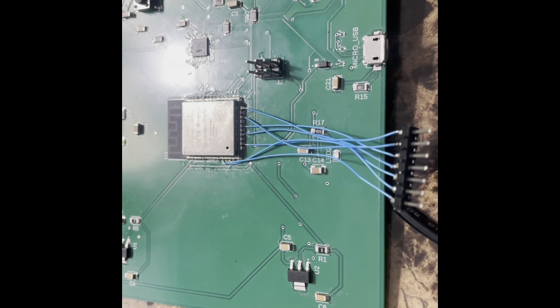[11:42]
Next order of business, we're going to show the final PCB and all the changes that were made. Over here is the final PCB that we ended up designing for the group. We also ran into a few minor issues on this side. Specifically, here we can see that we had to incorporate a bunch of extra GPIOs, because it turns out we were missing quite a bit of pins for the display. So we had to solder a bunch of extra wires to GPIOs, all going to pin headers so that we can use additional pins for the display.
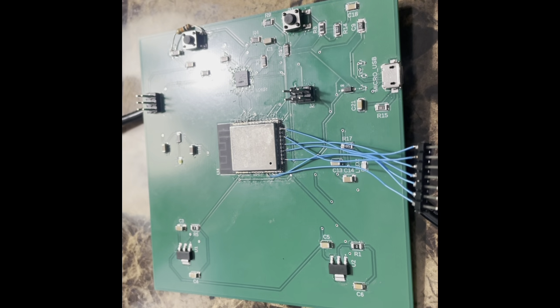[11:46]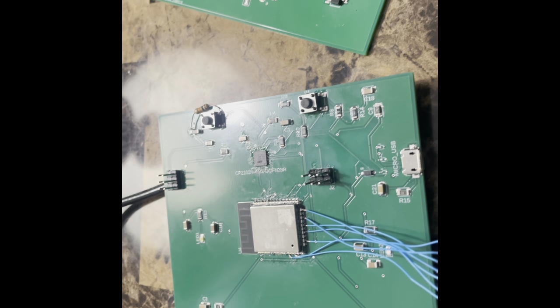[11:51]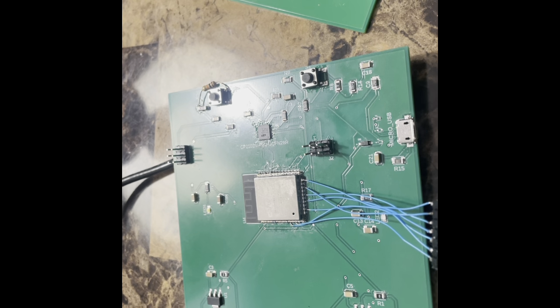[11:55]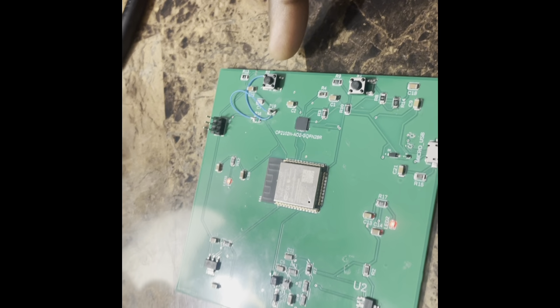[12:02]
Some of the changes on this PCB were that we swapped out the switching regulator and used linear regulators instead because we knew those worked. We also updated the circuit that we had issues with prior, and we made that correction, as we can see over here. So now we were able to create a circuit that was wired correctly, and we were able to boot up the chip.
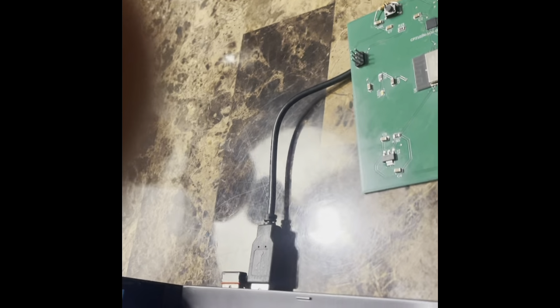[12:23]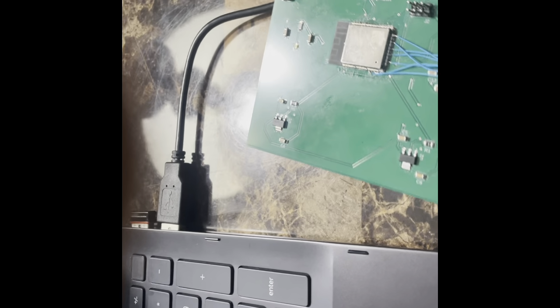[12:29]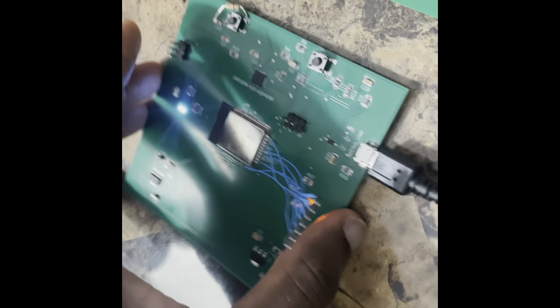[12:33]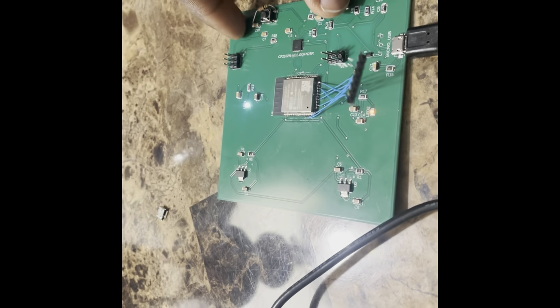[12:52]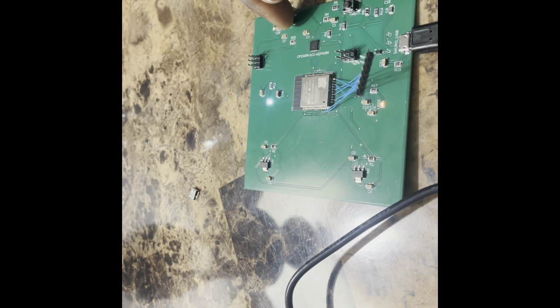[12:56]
In terms of a demonstration, you can see that it's working. Once we go over here, we upload the code, and then we try to compile it. I'll do the same thing that I did on the previous one: reset, boot, and that should give me a full compile. And here we see that everything is running successfully, and we're able to fully boot up the chip.
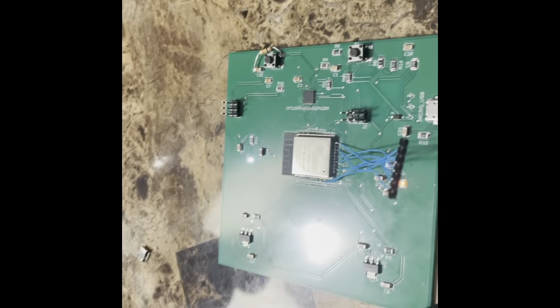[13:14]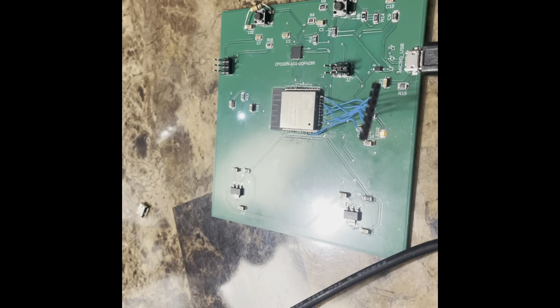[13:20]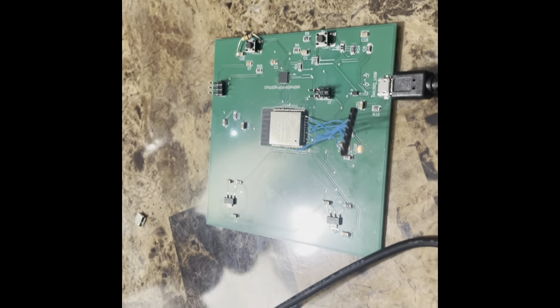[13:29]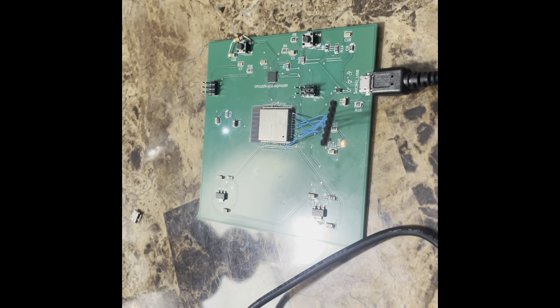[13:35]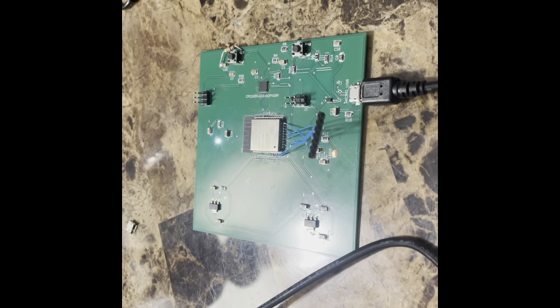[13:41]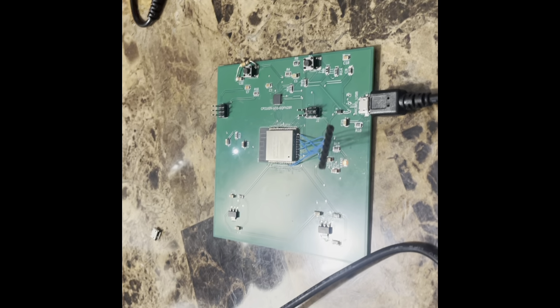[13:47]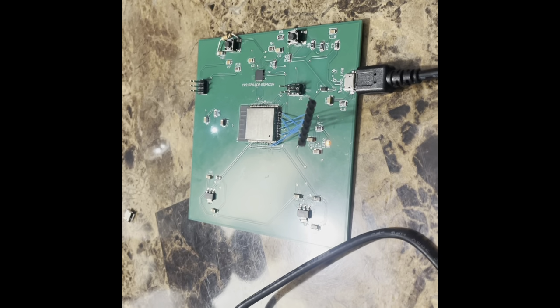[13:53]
In terms of design, everything else remained the same. We didn't really change much else, because since we were able to get the first board up and running, I figured we kept the design the same and just tweaked the areas that needed it, which were the switching regulators and rerouting the trace that went to the pull-up resistor button, making sure we fixed those critical points. Thank you.
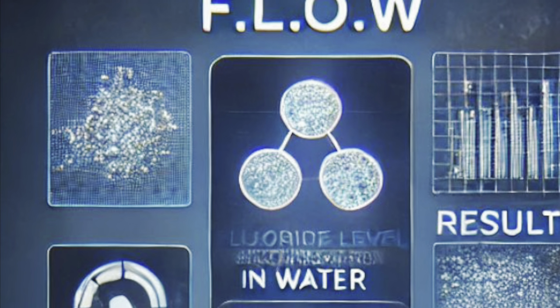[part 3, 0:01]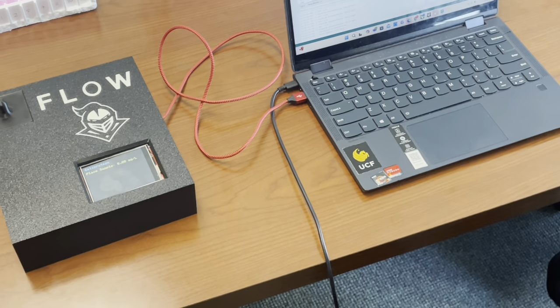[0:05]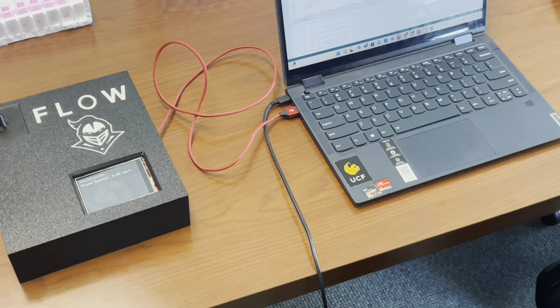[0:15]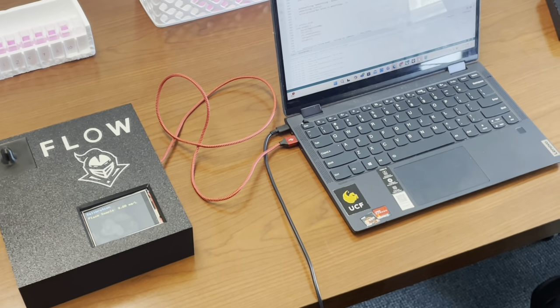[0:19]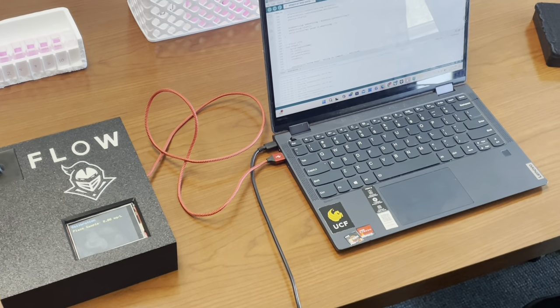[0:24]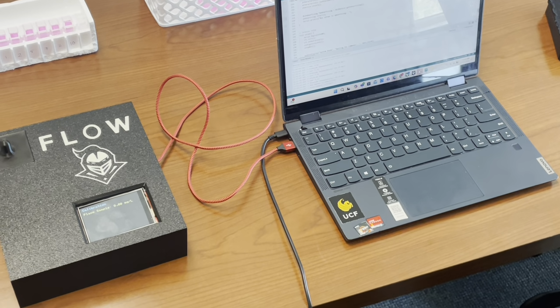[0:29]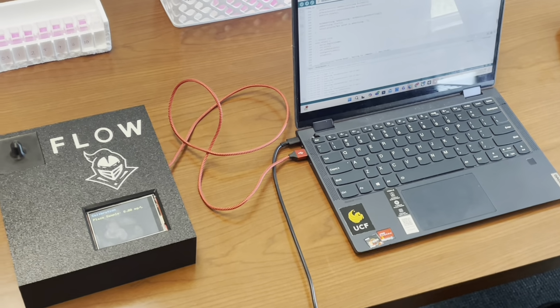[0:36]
We like to call our device FLOW, which is fluoride level observation in drinking water. Our device takes in a green 532 nanometer laser that goes through our cuvette, which will emit orange light, and this emitted light will be detected by our photodiode, which will input a certain level of light intensity into our device. This light intensity will allow us to calculate our fluoride concentration.
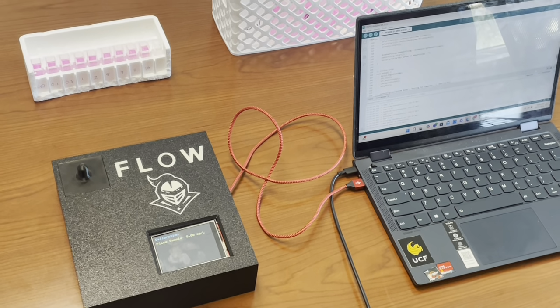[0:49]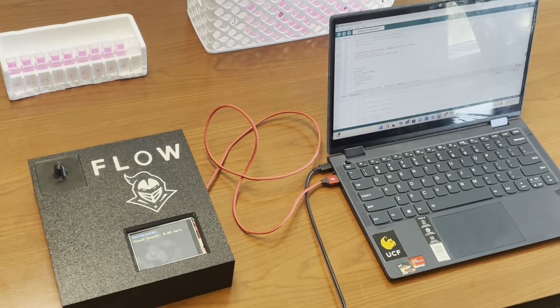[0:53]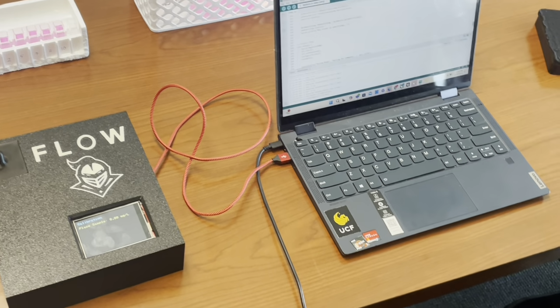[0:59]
So now we will go into our testing and our calibration phase. Before we can calculate the fluoride concentration, we have to go through each sample and calibrate. So we will begin that now with our device.
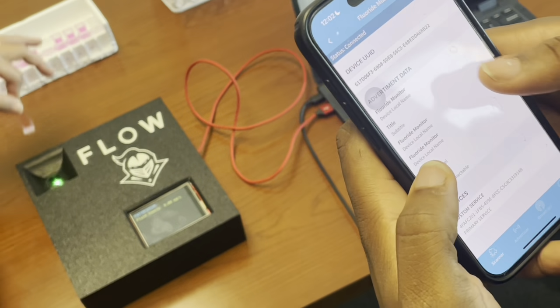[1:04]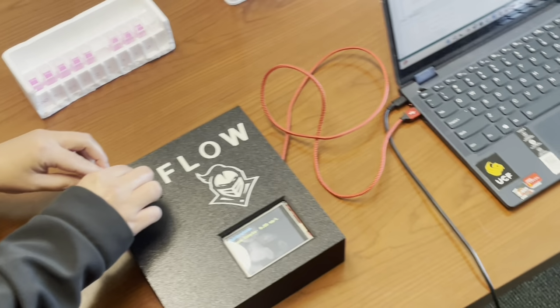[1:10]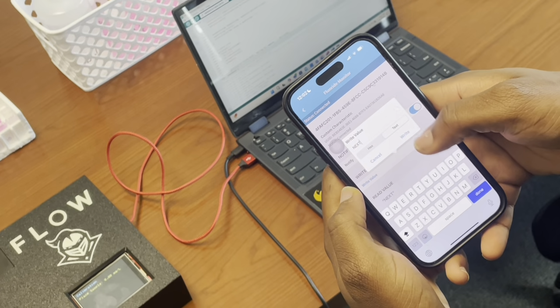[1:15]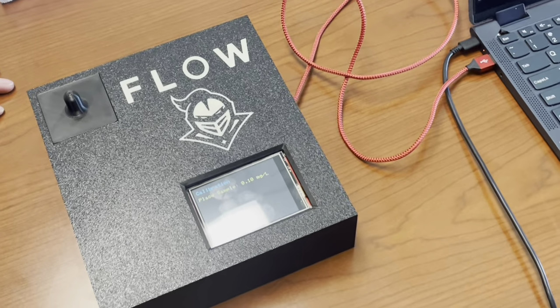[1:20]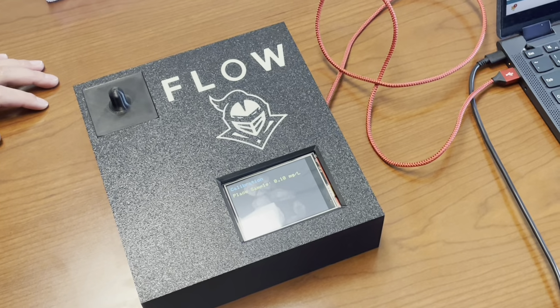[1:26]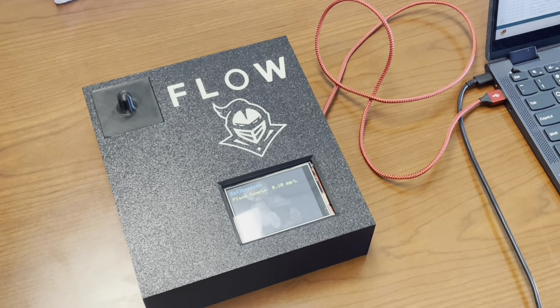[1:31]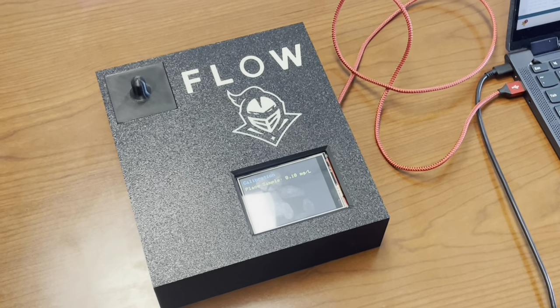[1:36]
All right, so once we connect through the app, Alyssa's going to place the sample in here, and from here we'll just do a command, which is next, and it will record it. So now on the display, it's still in our calibration phase, we have our sample, and it'll store and record the values through our BLE connector app. And now it says place sample 0.10, which we will now place.
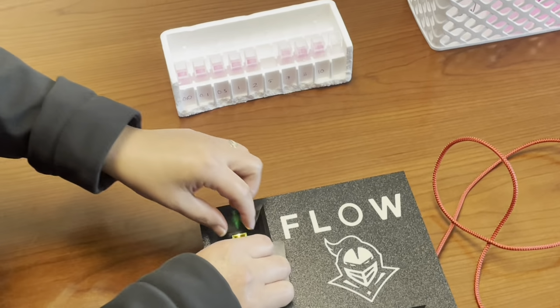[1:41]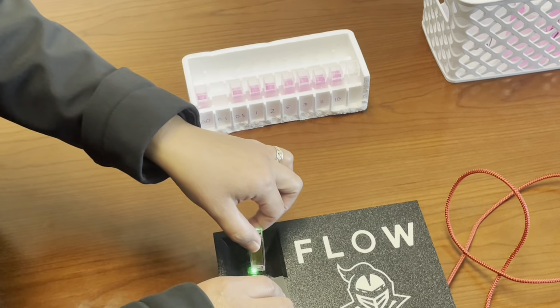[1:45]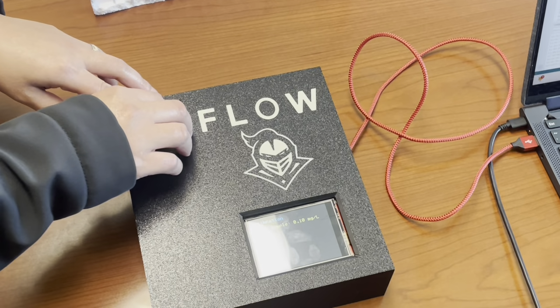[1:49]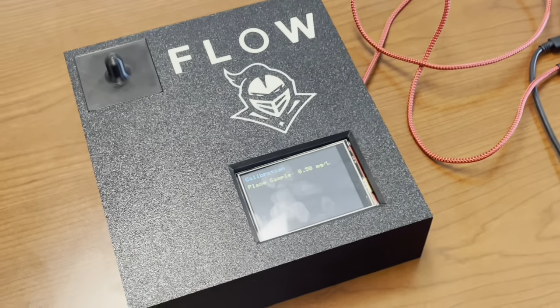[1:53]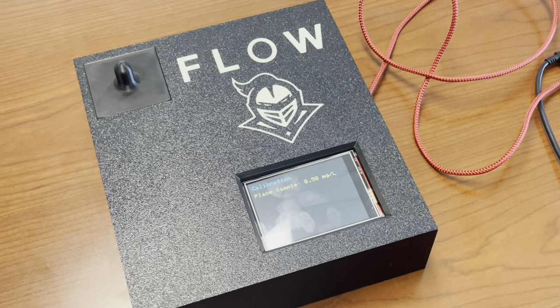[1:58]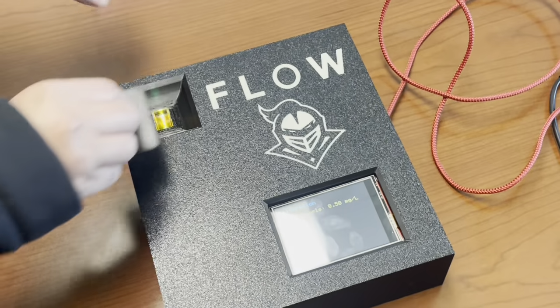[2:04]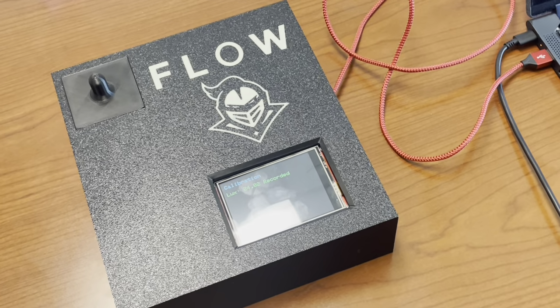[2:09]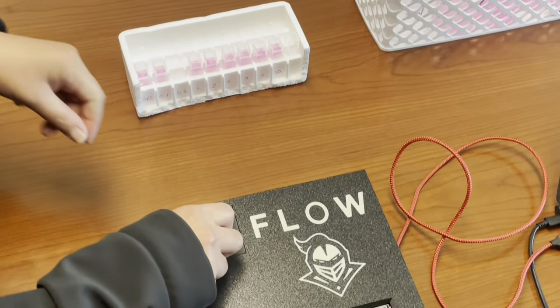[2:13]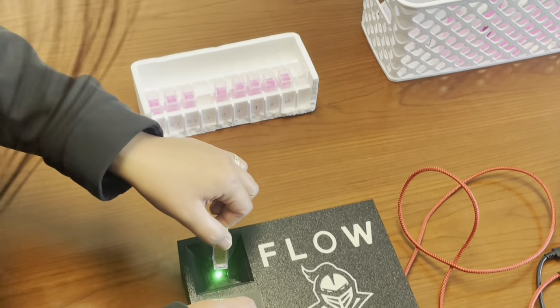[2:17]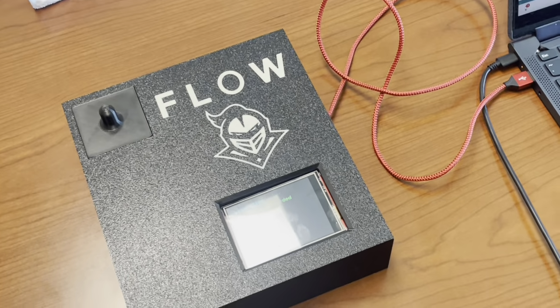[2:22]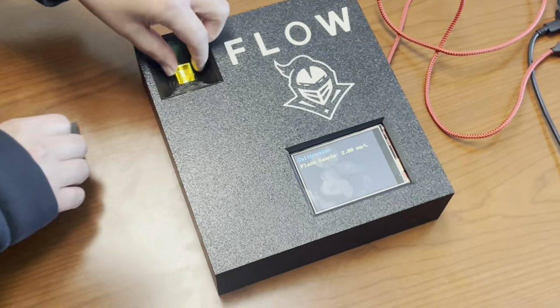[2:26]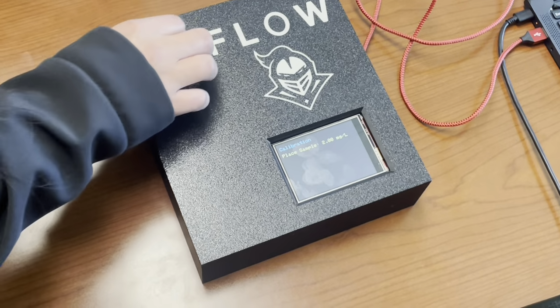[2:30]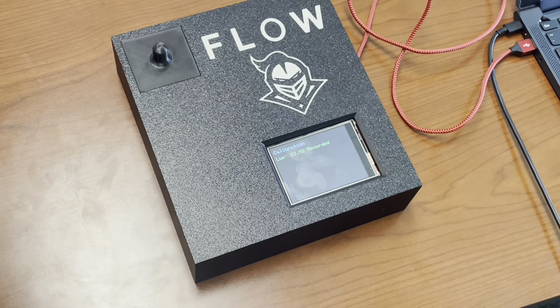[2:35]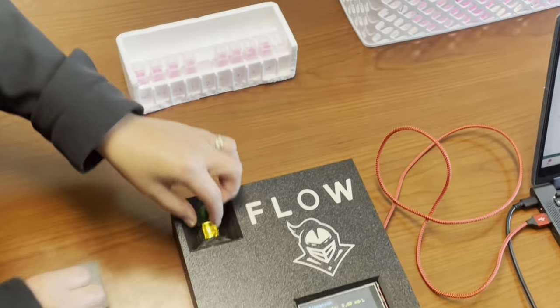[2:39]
Okay, now we're going to do 0.5. Okay, now we're going to go to the 1 milligram per liter sample of our cuvette. And now we're going to take that value. Okay, now we're going to go to our 2 milligram per liter sample. Okay, now we have taken that value, we are going to go to our 5 milligram per liter sample.
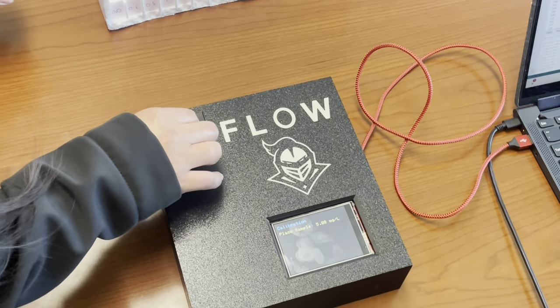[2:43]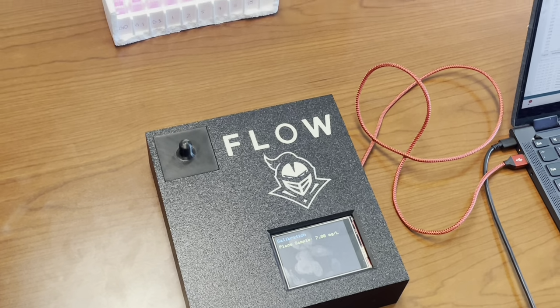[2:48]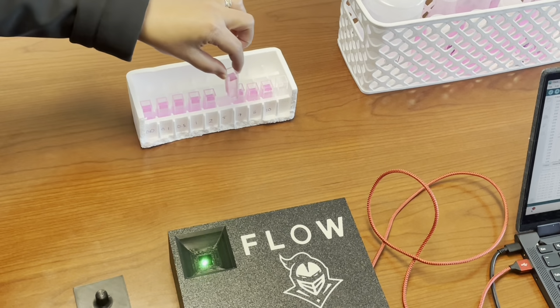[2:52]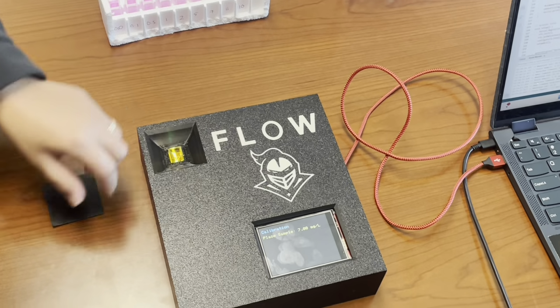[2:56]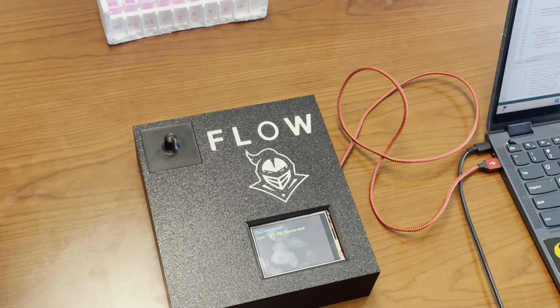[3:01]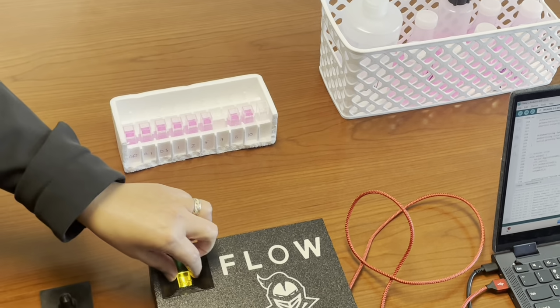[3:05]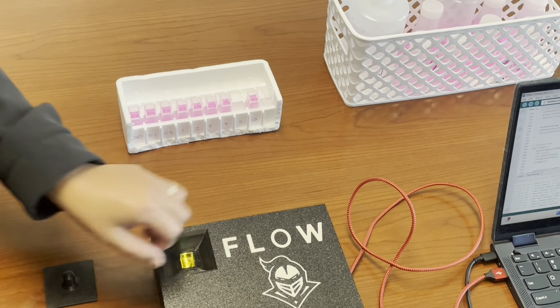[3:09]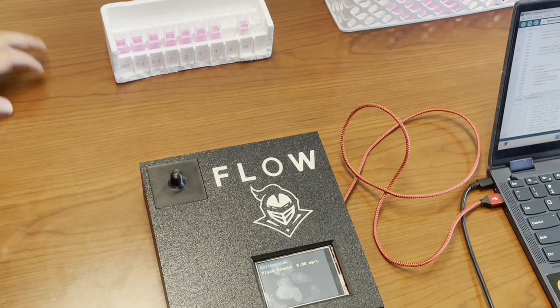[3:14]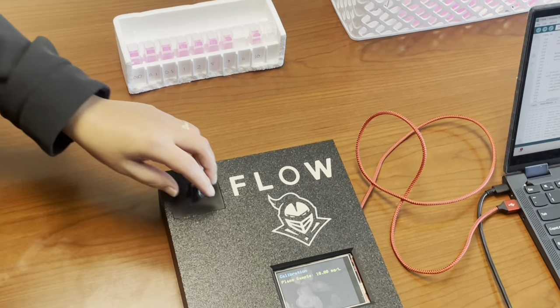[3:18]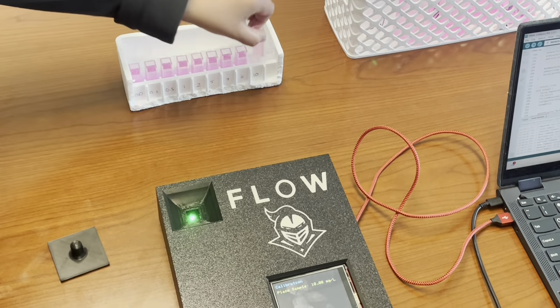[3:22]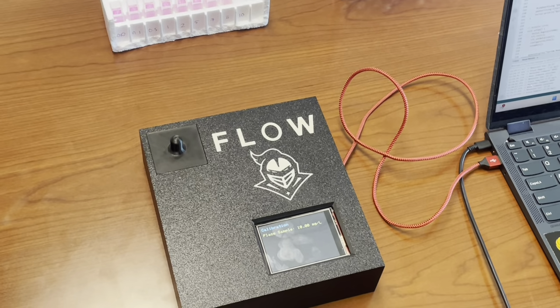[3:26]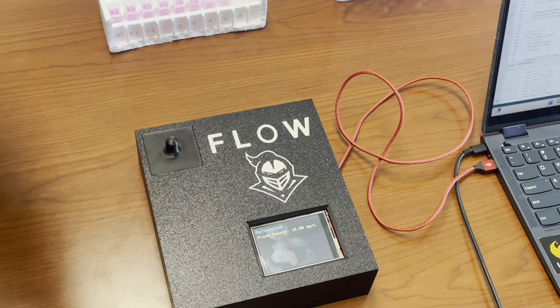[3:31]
Awesome. Now we're going to go to our 7 milligram per liter sample. Okay, now we're going to go to our 8 milligram per liter sample. Great. Now we're going to go into our last sample, which is our 10 milligram per liter sample. Once this data is received, we will go into the calculation of our slope-intercept form, and we will be able to measure our data.
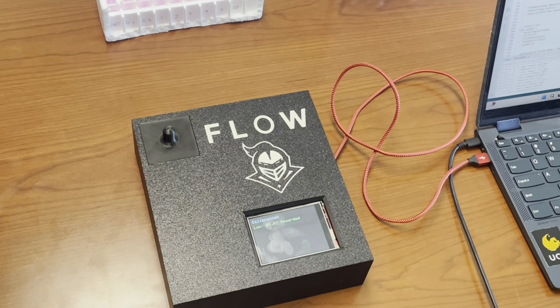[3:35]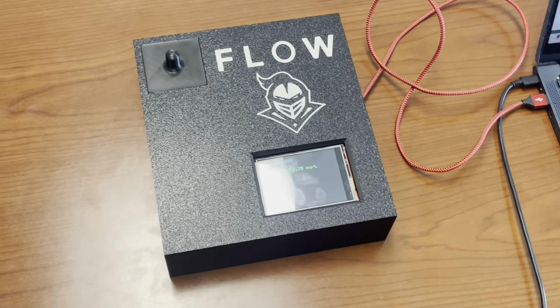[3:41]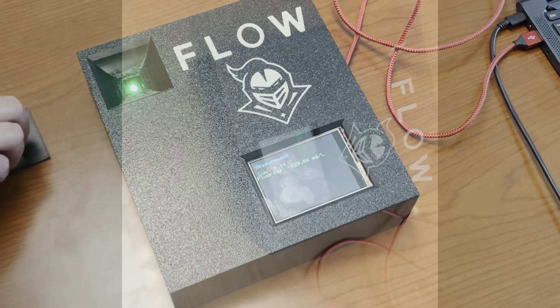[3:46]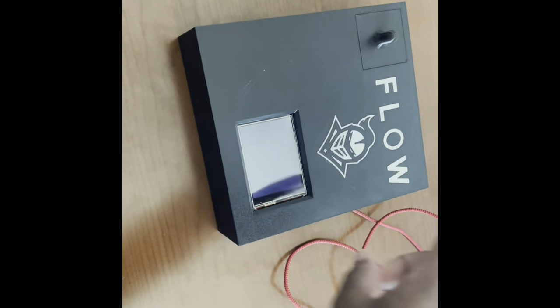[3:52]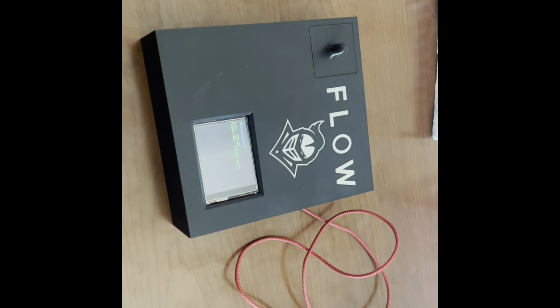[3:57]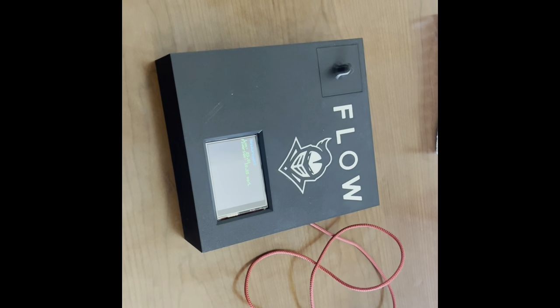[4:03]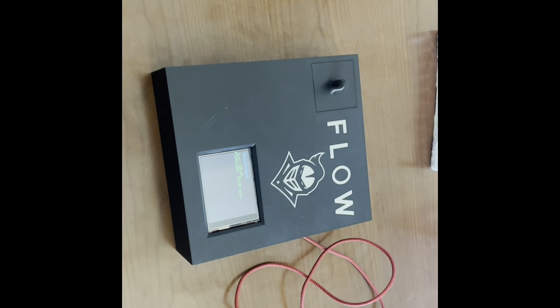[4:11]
Okay, great. So now we're in our measurement phase. Through all of it, you can see that it says the number 10 is in, and that it's detecting 10 milligrams per liter of fluoride concentration. So now we have calibrated. In our measurement phase, we are confirming that there is 10 milligrams per liter of fluoride within our cuvette sample. So we'll try.
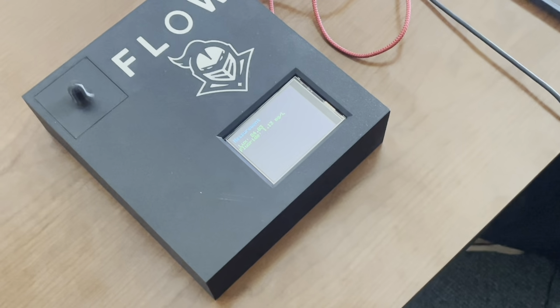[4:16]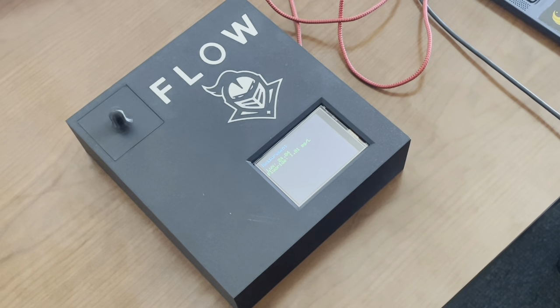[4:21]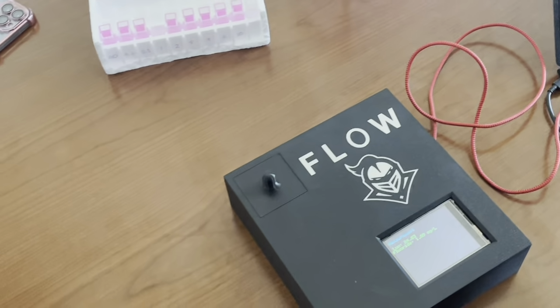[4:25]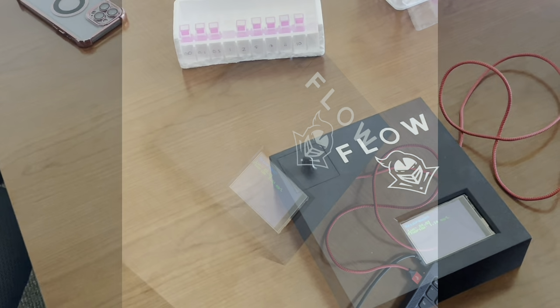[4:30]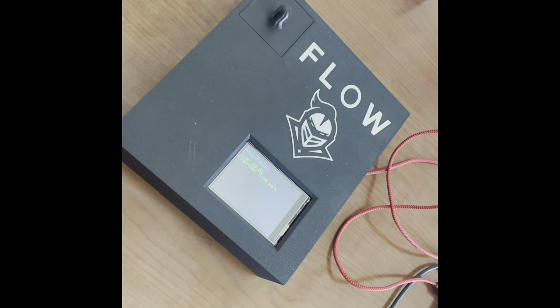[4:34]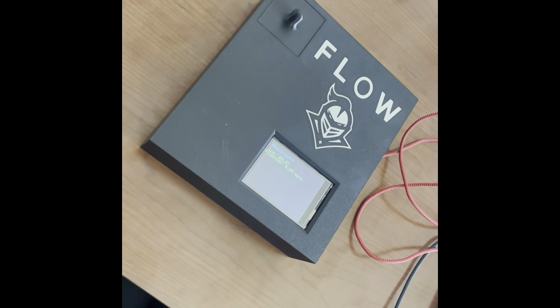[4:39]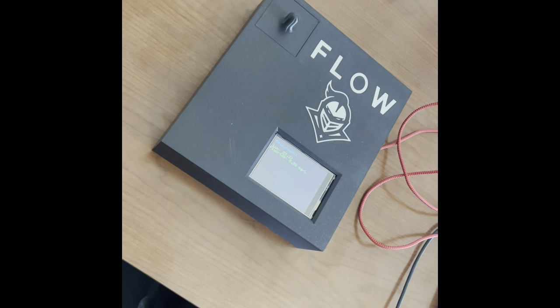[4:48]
Okay, so this is our 1 milligram per liter sample of fluoride, and it shows that there is 1 milligram per liter of fluoride concentration within our cuvette sample. Okay, this is our 5 milligram per liter sample, and it is showing that we have 5 milligrams of fluoride concentration. Okay, this is our 7 milligram per liter sample, and it is showing that we have 7 milligrams of fluoride concentration within our sample, and it's displaying on our screen.
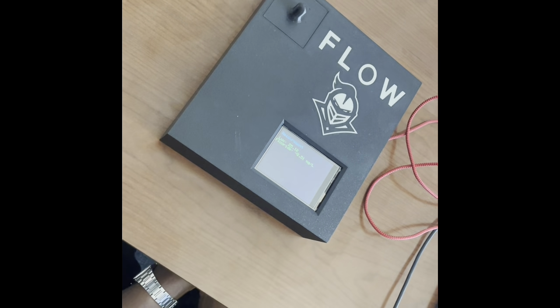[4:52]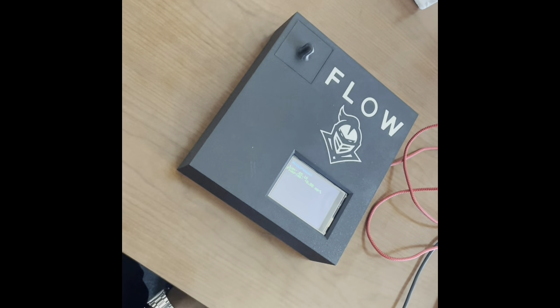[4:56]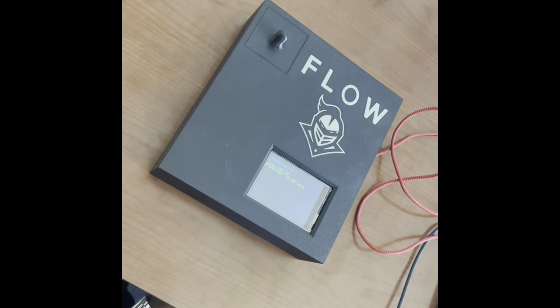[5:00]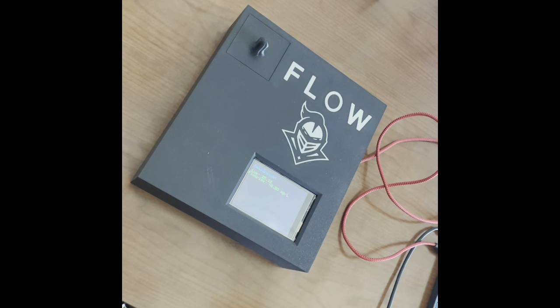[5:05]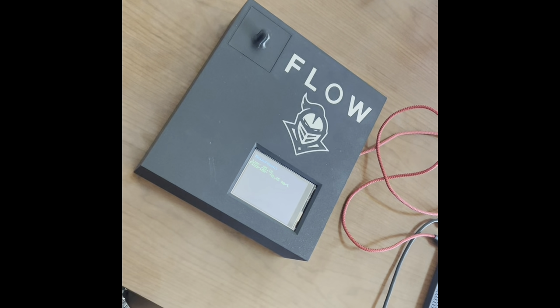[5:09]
Okay, so now we have our 0.0 milligram per liter cuvette sample, which is our distilled water, which means that there is no fluoride concentration within our sample. And you can see here that this is our highest lux value because there is no fluoride concentration. And you can see that there is no fluoride concentration being read because it is a negative value.
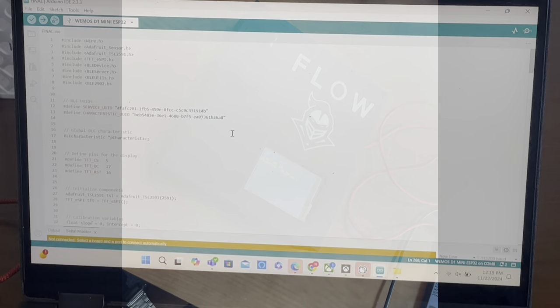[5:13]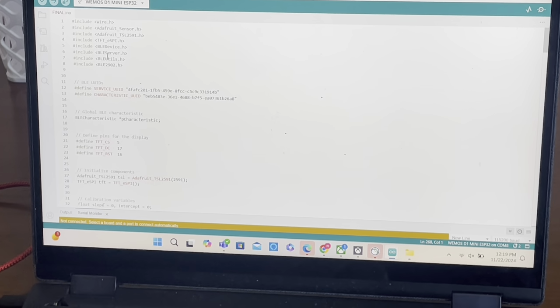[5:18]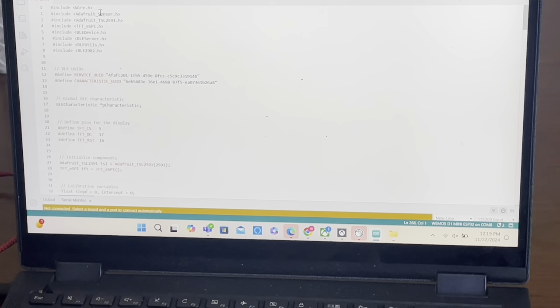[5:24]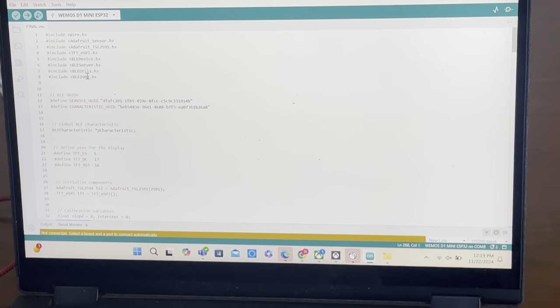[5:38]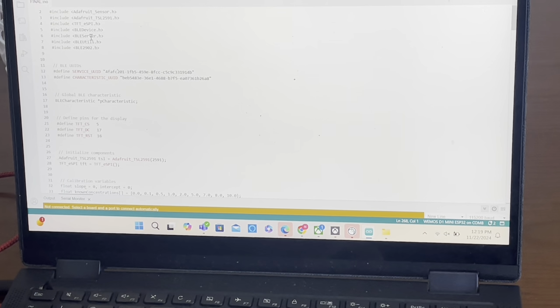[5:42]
So here we have all the libraries that are included. As you can see, we have the TFT_eSPI.h, which is for the display, the Adafruit_Sensor.h and the Adafruit_TSL2591.h, which are for the sensor, and then our BLE, which stands for Bluetooth Low Energy, libraries that will enable us to do all the commands that we have in the code on our app.
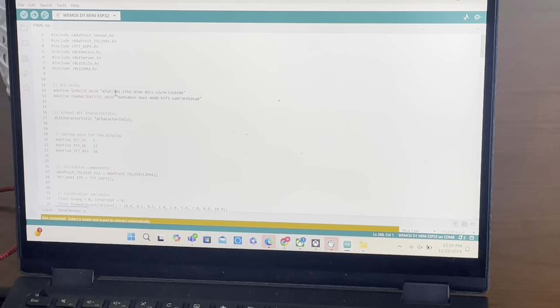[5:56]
So right here, these are the characteristics that we'll have. This right here will determine our device and what we can do to it, based on the characteristics.
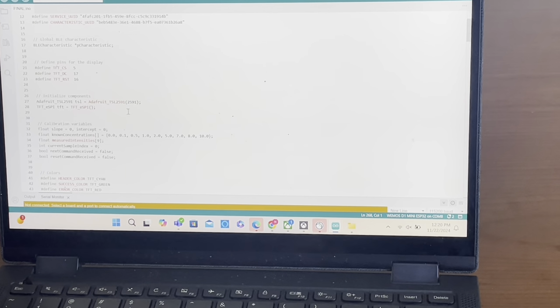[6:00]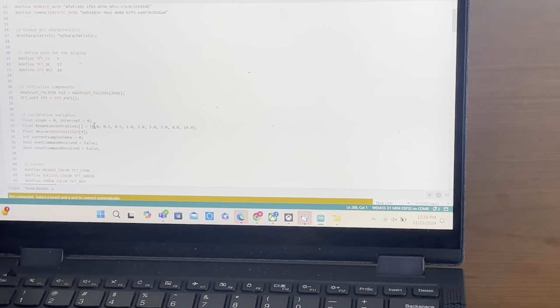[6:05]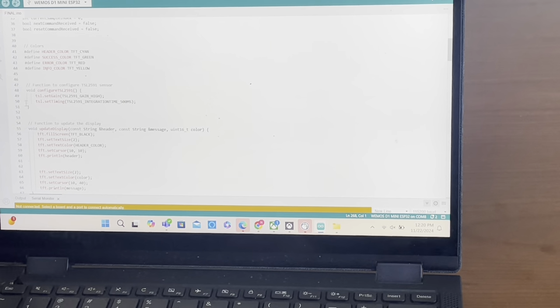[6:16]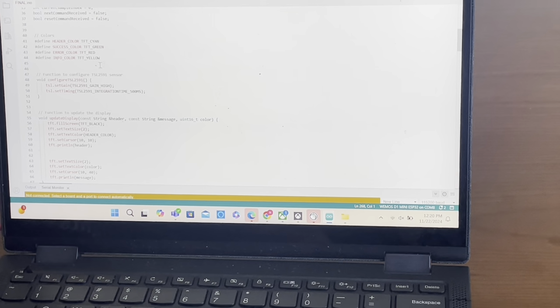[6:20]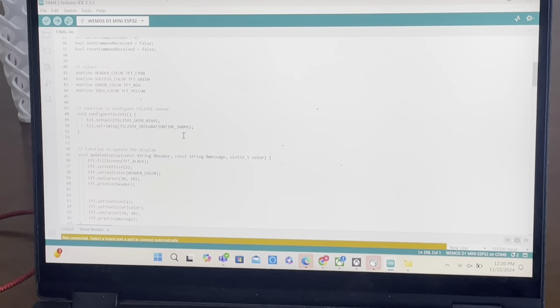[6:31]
All right. Here, this is the calibration variables that we have right here, and which shows us from all the samples that we have, which is 0 to 10, right here, and then right here is for the function to make sure that the sensor is operating at a high gain rate, and it will be at 500 milliseconds, which is what we changed for more stability from 100 to 500 milliseconds.
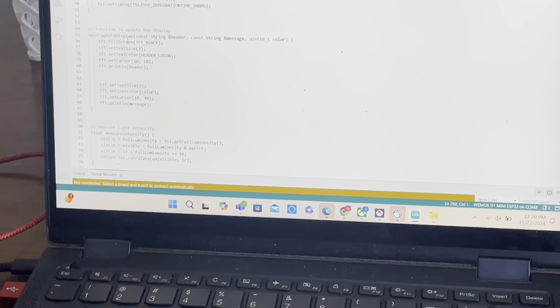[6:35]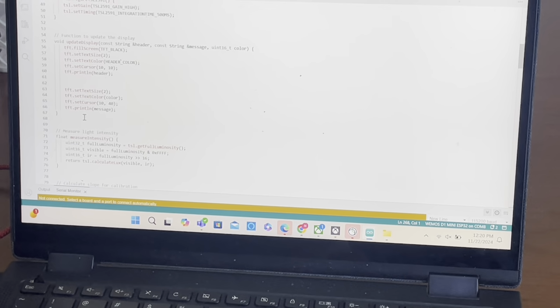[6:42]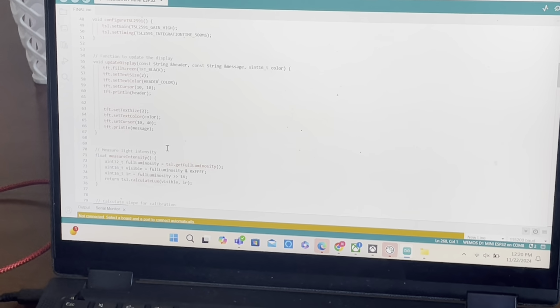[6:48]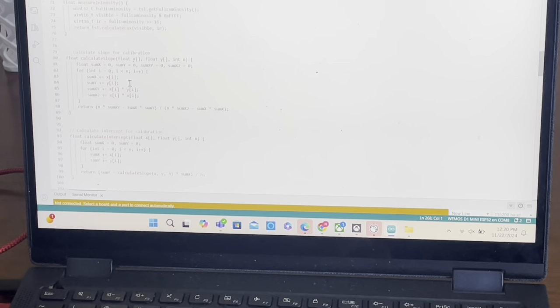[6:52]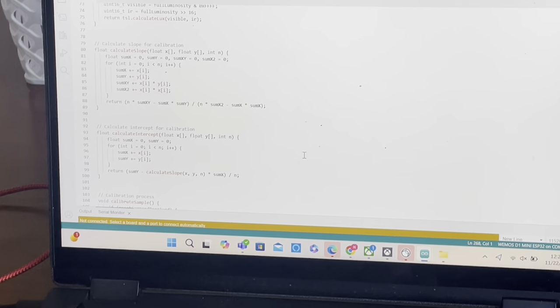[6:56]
Our display right here shows all our functions for the update display, which is all our colors, all the things that you see on our display right here. So it permits us to see all the functions that we do and the colors that we've chosen. Here, this is our calculation for the slope that we did for the calibration based on our documentation. These are all the things that we had to calculate.
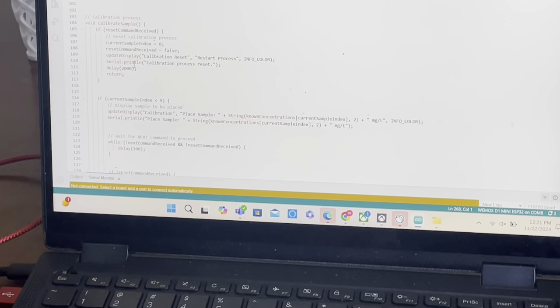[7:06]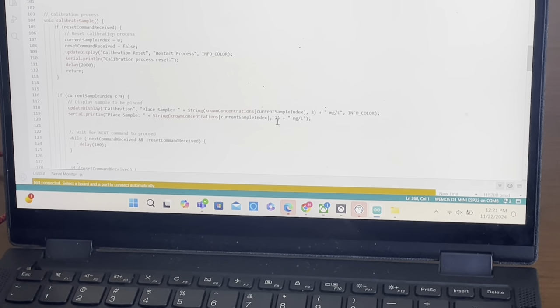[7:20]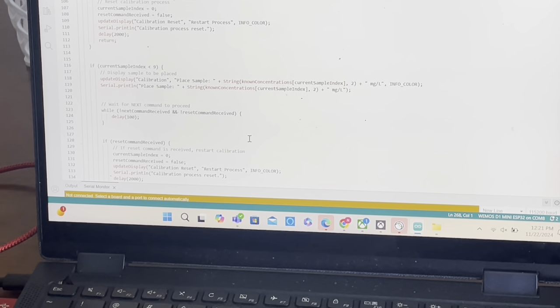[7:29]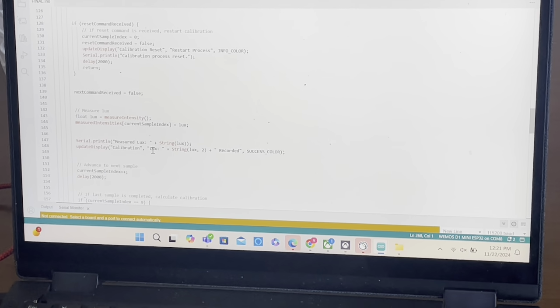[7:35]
All right, and this is for the process. So when we calibrate, this will actually do the process for us and do the sample plus the known concentration, and from there it will print what we need to place and what sample we need to place based on the iteration that we have of each sample, which goes up to 10 milligrams per liter. And if we don't receive any command, it's an if statement, we restart the calibration.
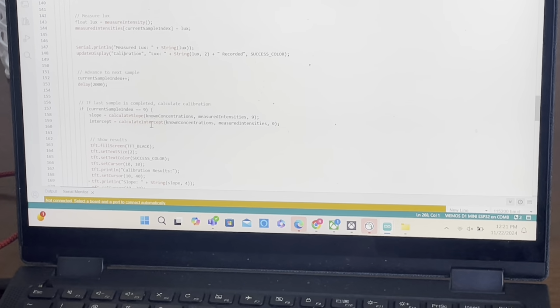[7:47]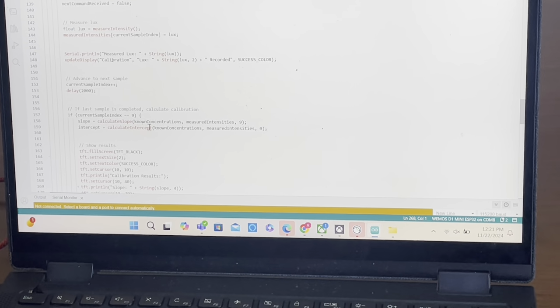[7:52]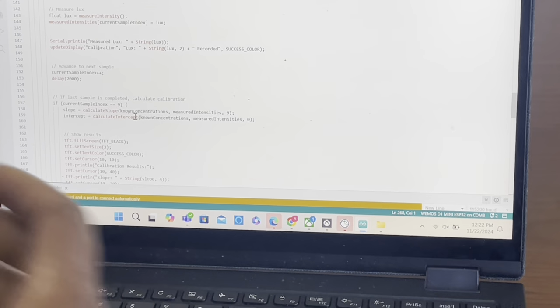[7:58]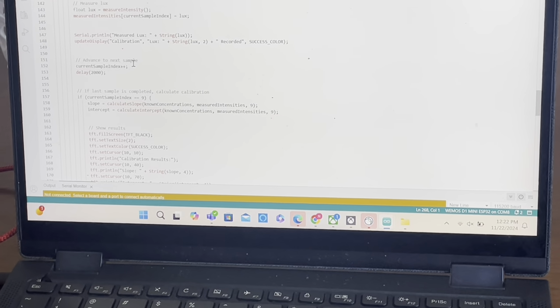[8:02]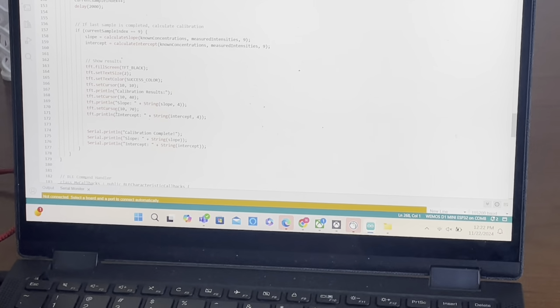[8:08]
This is the measuring of the lux. This is what we get after the calibration and everything is done. We measure the lux based on the calibration stored data, and whatever sample we put in the device, it will pick up which sample we have in the device. All right, and this is to show the results, this is another thing for the display.
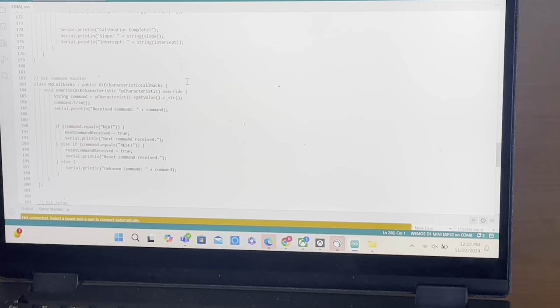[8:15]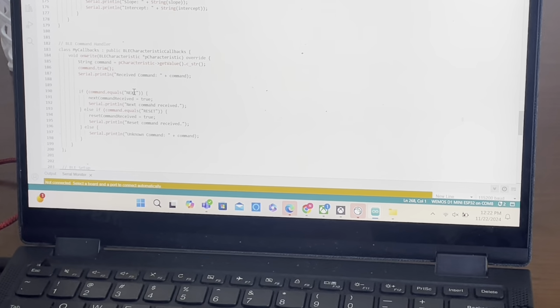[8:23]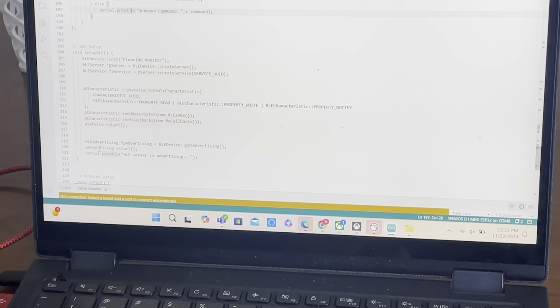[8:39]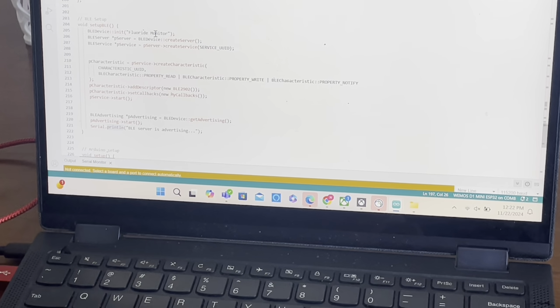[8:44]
And this right here is very important. These are our command handlers. So if I press next, which you guys saw at the beginning of the video, we'll go to the next sample, and we can also do a reset command to make sure we go back to the first sample. Right here, this is a BLE setup. Just everything that we needed to do to make sure that this is the name of the BLE. We had to initialize it, and from there we are able to write. And the write function is what permits us to do the commands.
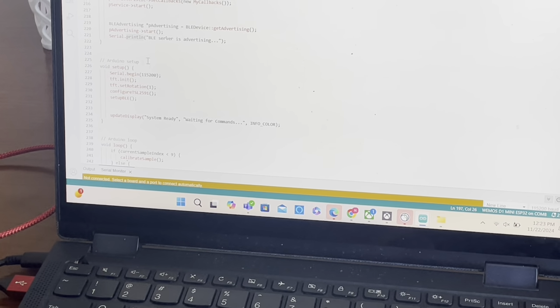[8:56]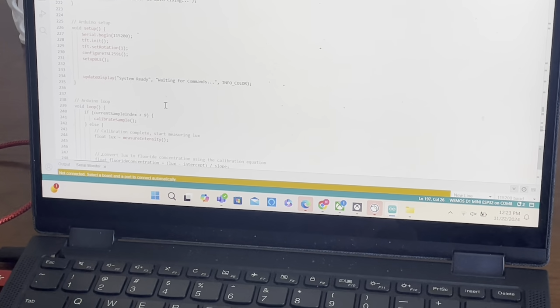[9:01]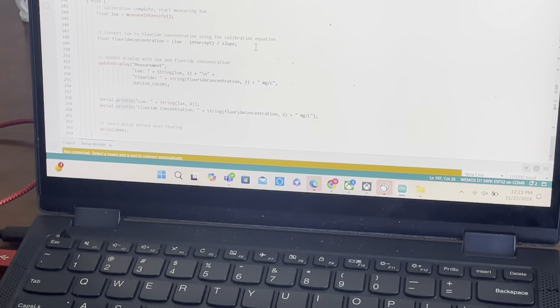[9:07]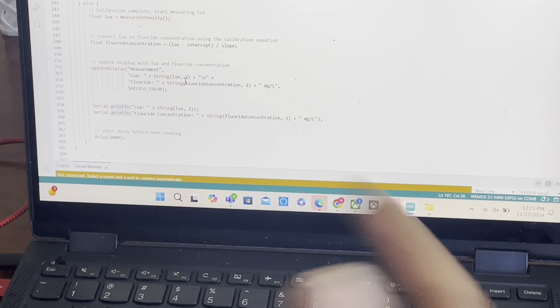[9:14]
And then this is the setup for Arduino, to let us know that it's ready and we're able to do our commands and work our code out. And this is just the Arduino loop to make sure that after every sample we're able to do the next. And this is our delay, and this is the end of our code.
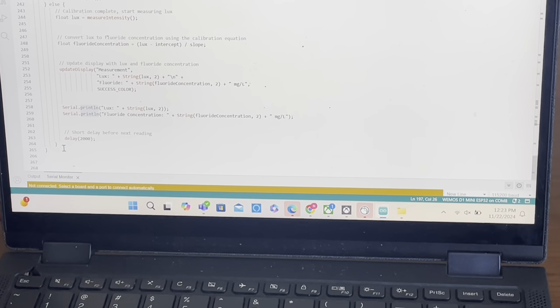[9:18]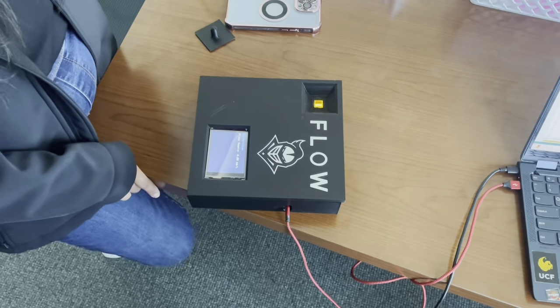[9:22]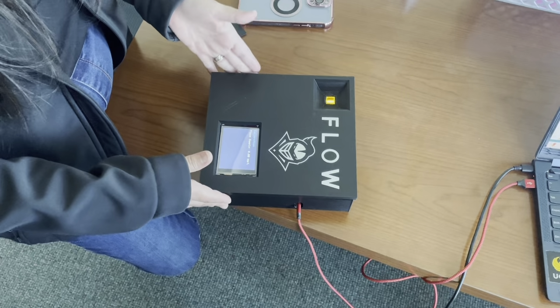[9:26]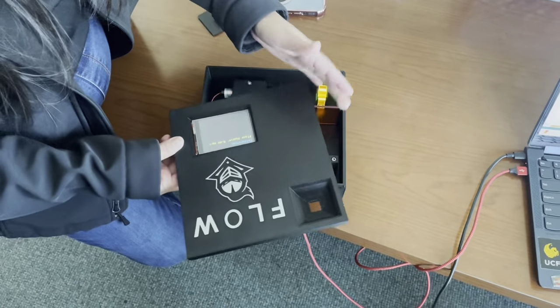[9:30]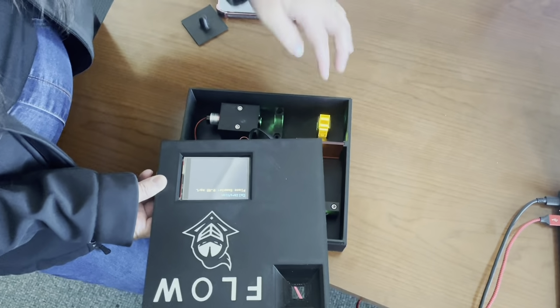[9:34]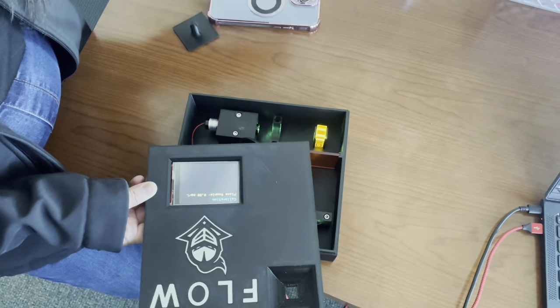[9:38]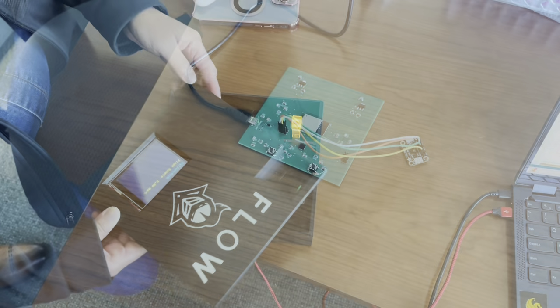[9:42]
All right, for our specification, we have a compact, lightweight device. We have this 3D printed, and for our inside, we made sure that our sample over here gets excited by our 532 nanometer. That's one of the specifications that we mentioned.
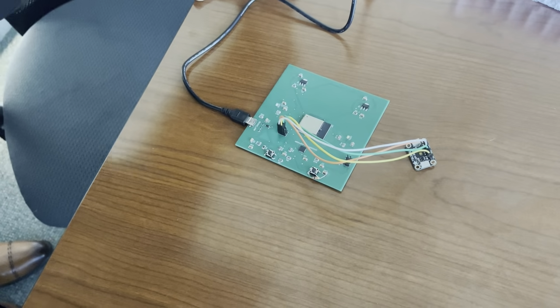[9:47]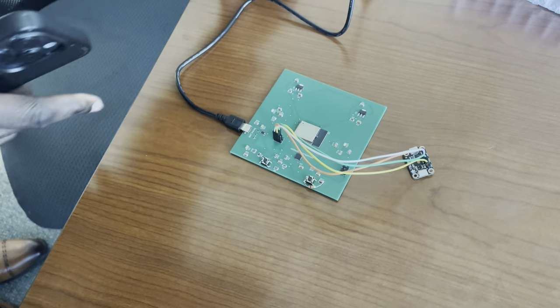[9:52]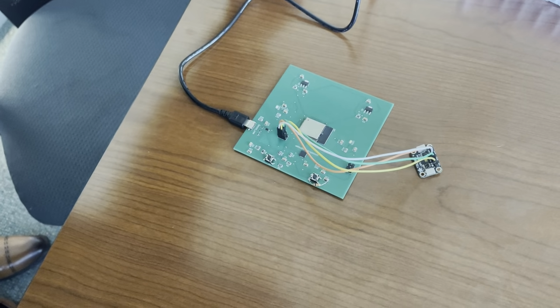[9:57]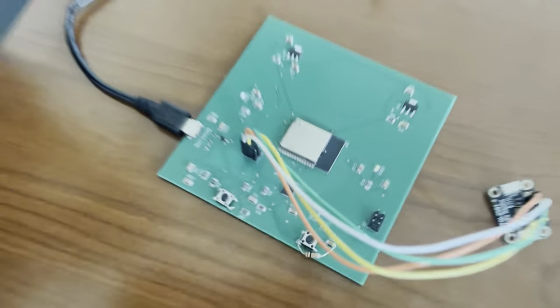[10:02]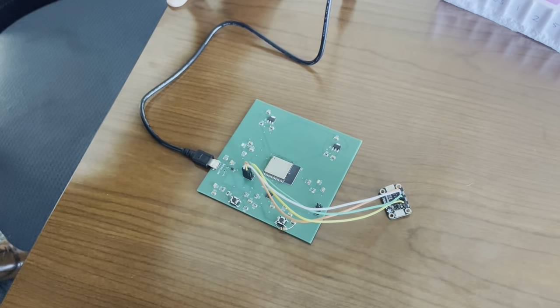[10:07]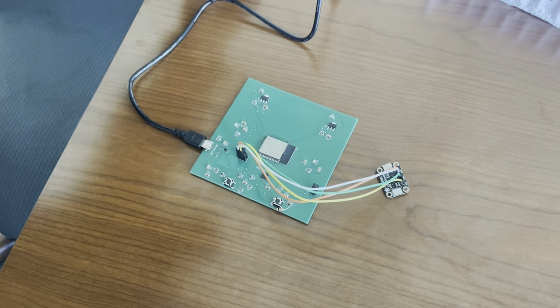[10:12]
Okay, so another one of the requirement specifications was to design a PCB that will be central power distribution for all of the optical components. And here we went with the ESP32 microcontroller. One of the main reasons why I'm choosing this microcontroller was also for another software requirement specification, which was to have a wireless Bluetooth connection that will be displayed on the portable device that we see here on the right.
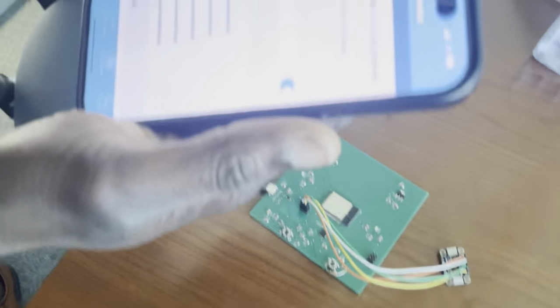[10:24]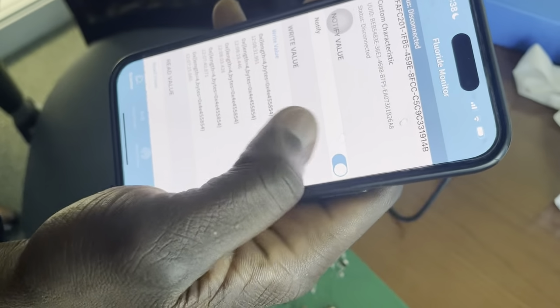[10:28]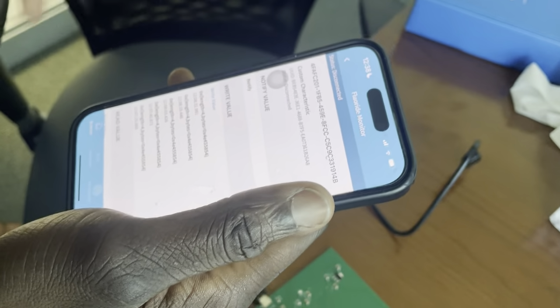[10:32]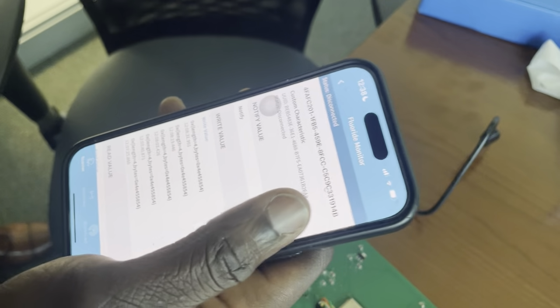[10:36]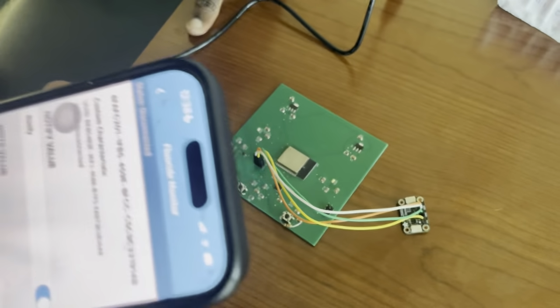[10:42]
And right here we used a fluoride monitor Bluetooth application, and here we're able to control and manipulate the values. We input the values, and then we'll see the place samples with the display and get calibrated on the display device.